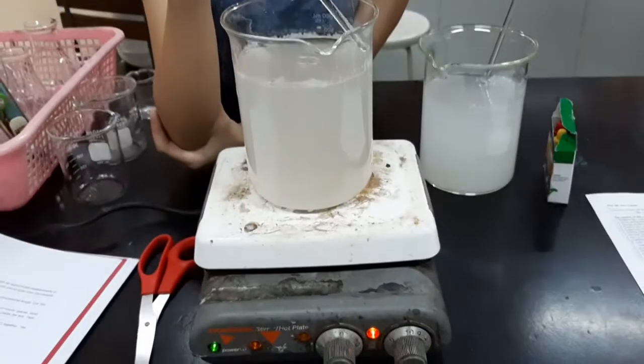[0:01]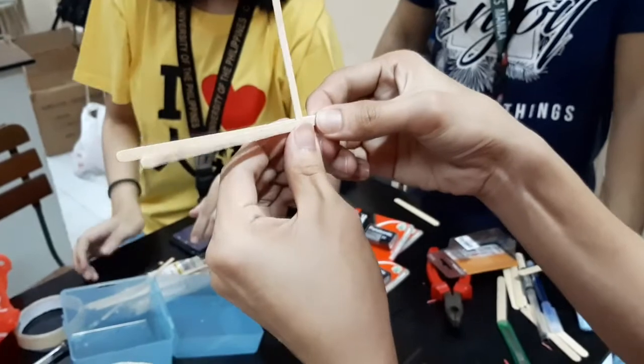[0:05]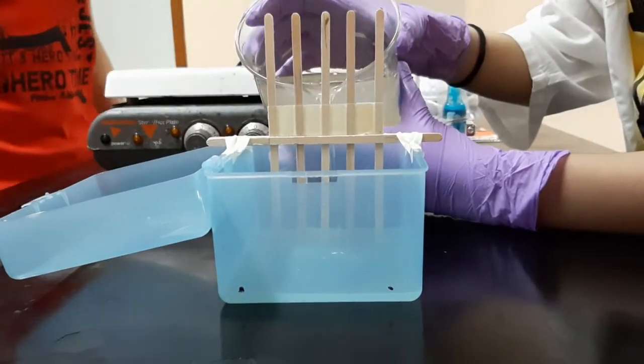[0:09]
Electrophoresis is a laboratory technique used to separate biological molecules based on their size and electrical charge. An electric current is used to move molecules to be separated through a gel.
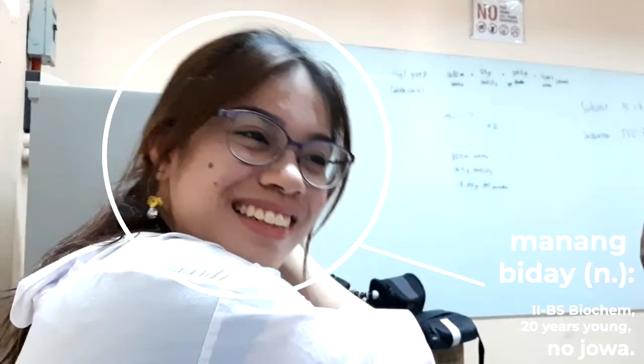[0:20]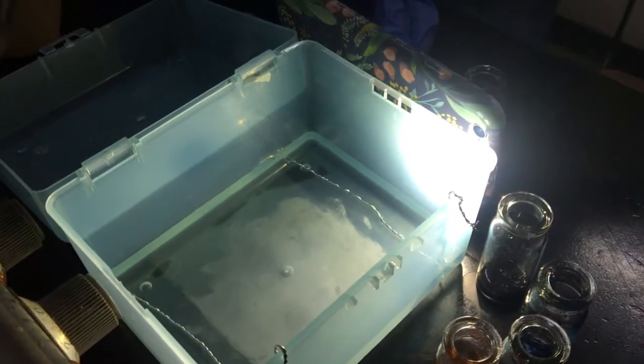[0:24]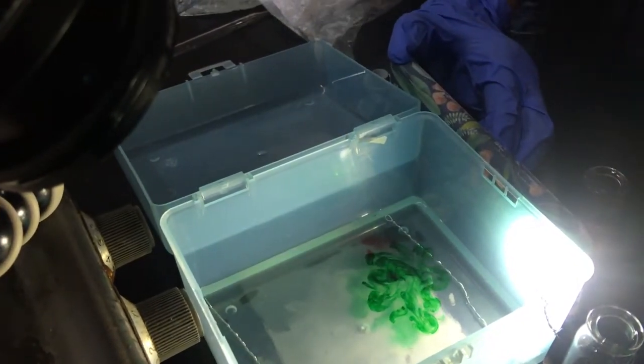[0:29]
Hi, I am Manang Biday, and in this video, let's take a step-by-step look at how to construct an electrophoretic setup using simple materials, and you shall be able to see how it separates samples, in this case, food coloring.
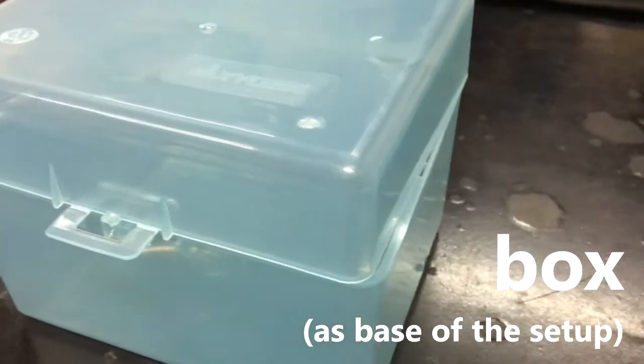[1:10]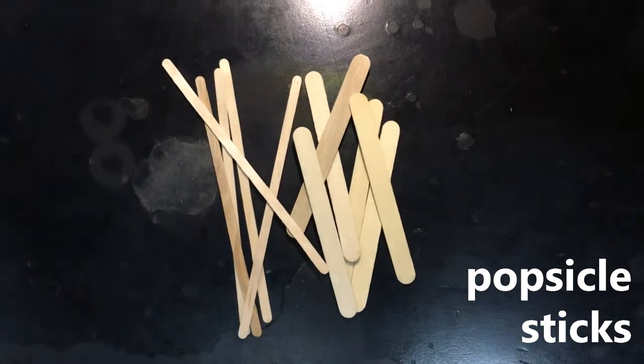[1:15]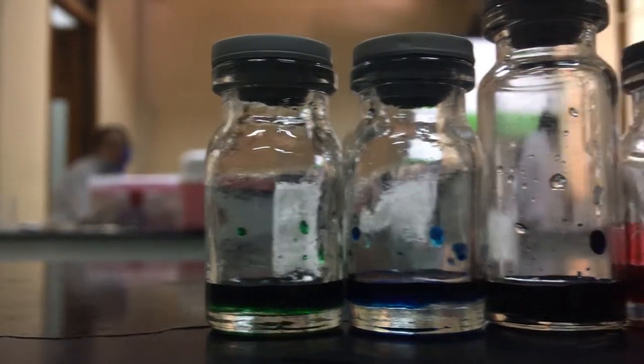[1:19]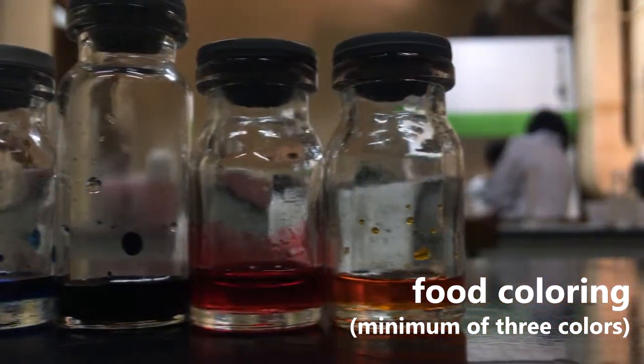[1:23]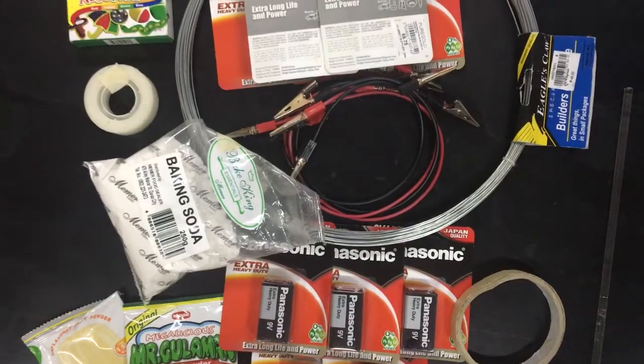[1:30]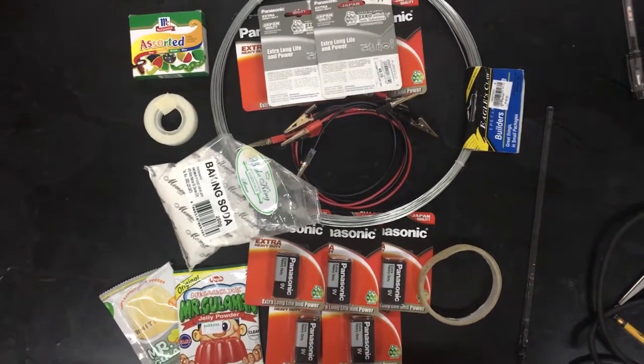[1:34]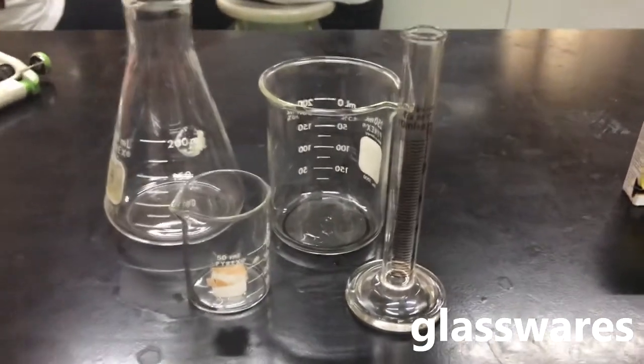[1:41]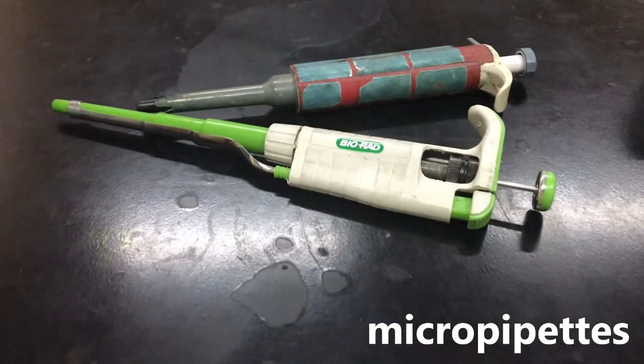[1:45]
First thing that we need to do is to assemble the materials needed for this experiment.
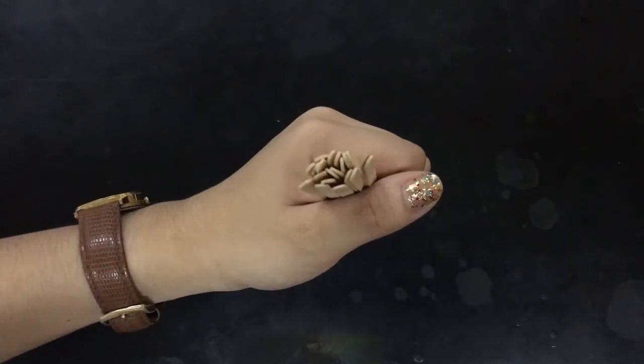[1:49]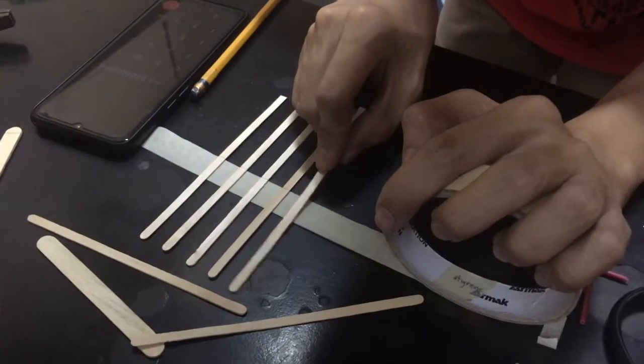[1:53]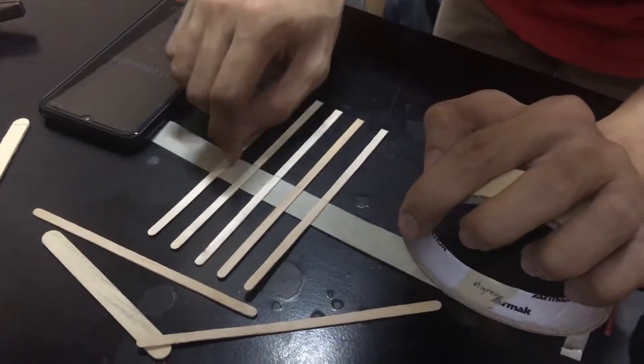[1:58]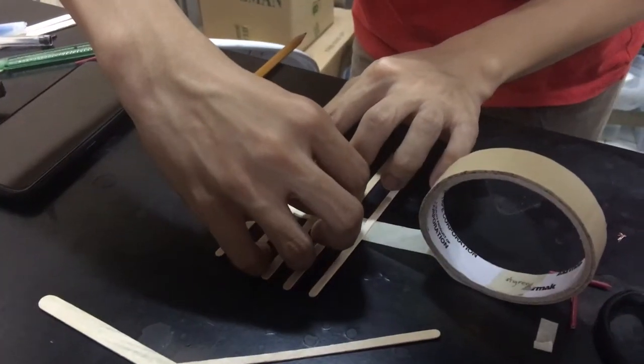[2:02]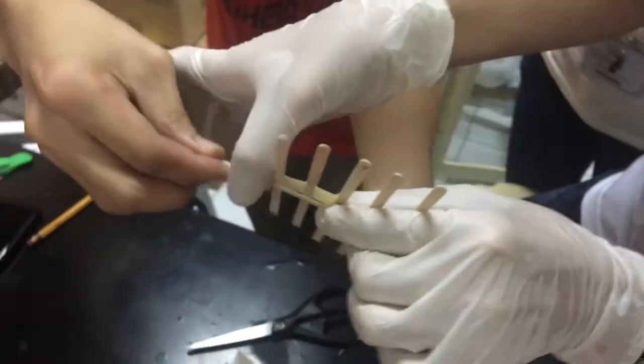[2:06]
First, we assemble a gel comb similar to this figure. The comb is made out of 5 coffee stirrers evenly spaced from each other, having the same height from the bottom of the box. They are then sandwiched in between 2 popsicle sticks. We tape them all together and the gel comb is formed.
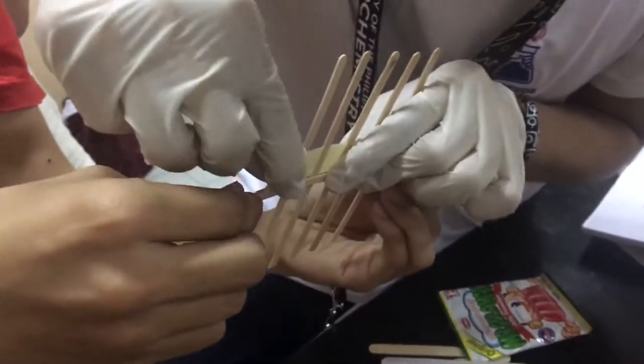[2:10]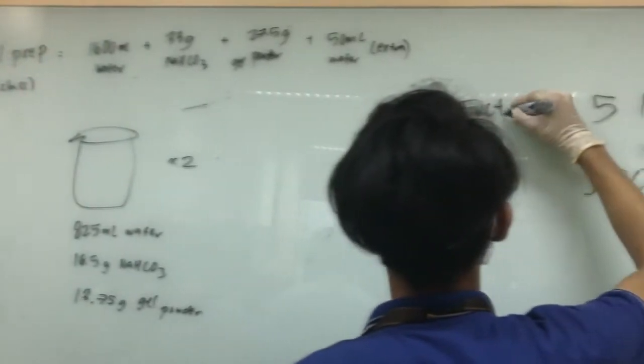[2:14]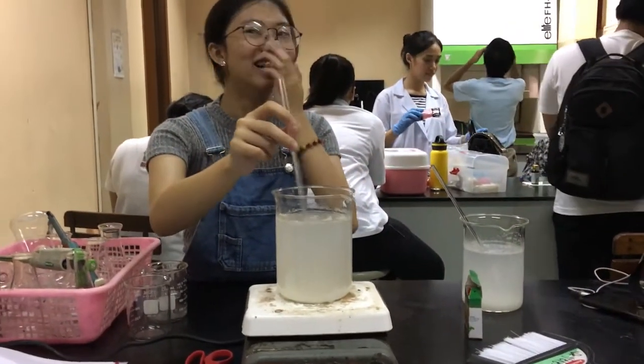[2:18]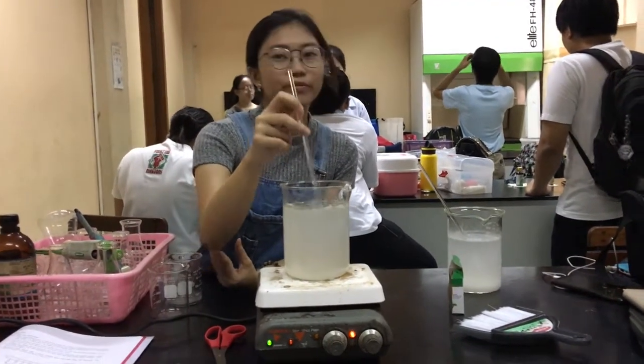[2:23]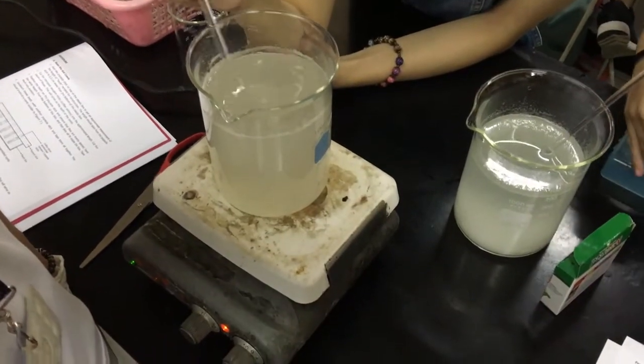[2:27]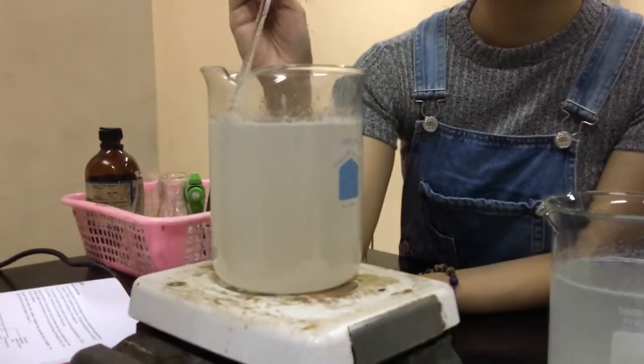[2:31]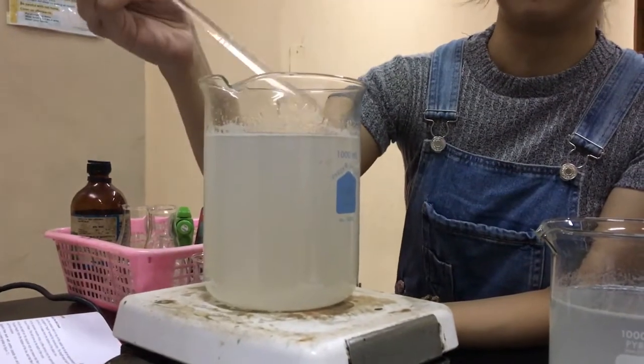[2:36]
Next, we prepare the gel. 50 ml of 1% weight per volume colorless gelatin is prepared in a buffer solution made of 250 ml 0.2% weight per volume of sodium bicarbonate in distilled water. The resulting solution shall be the gel solution. It is heated and stirred several times until the gelatin powder is completely dissolved. The final solution is translucent in color.
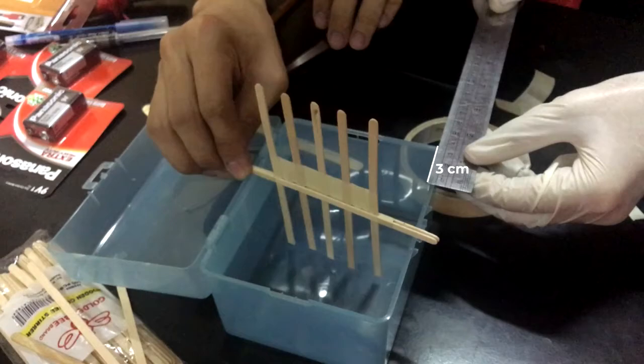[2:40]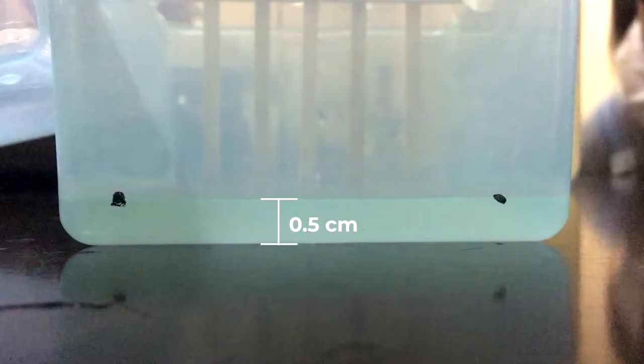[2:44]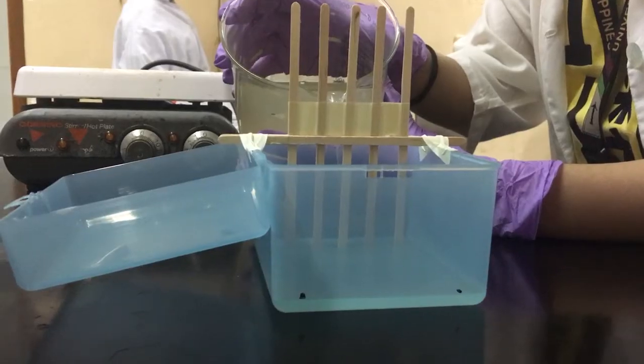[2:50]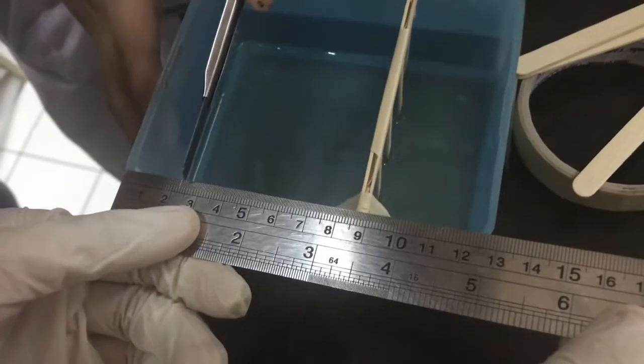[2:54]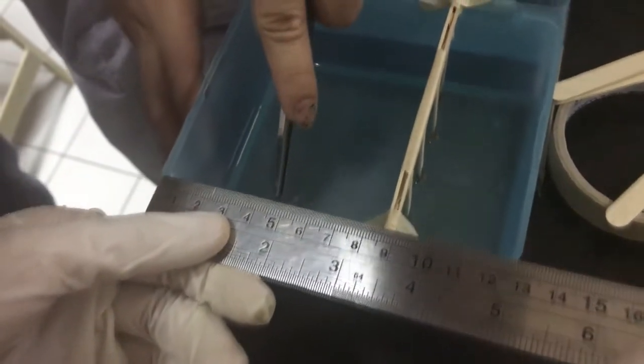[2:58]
The comb is now positioned 3 cm away from the wall of the plastic box. The gel solution is poured into the box until 0.5 cm of the teeth are submerged in it. The solution is then left to cool and solidify. After the gel solidifies, the comb is carefully removed, and the gel is cut 2.5 cm from top and bottom. The extra gel is discarded.
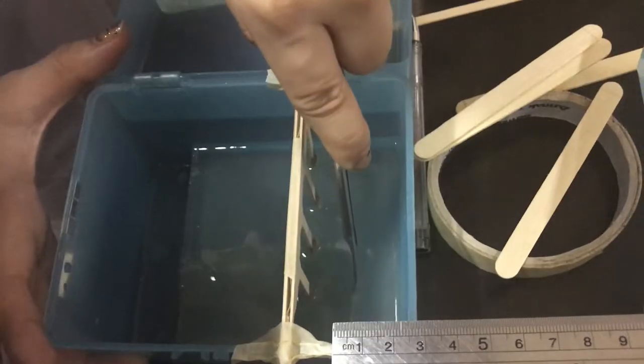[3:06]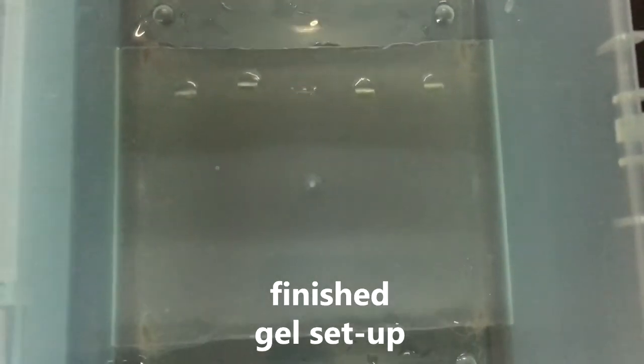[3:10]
Installing the electrodes is the tricky part. The wires are bent such that both fit inside the box and can be hooked at the sides.
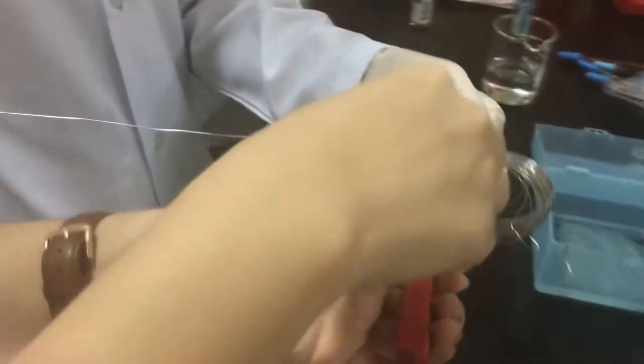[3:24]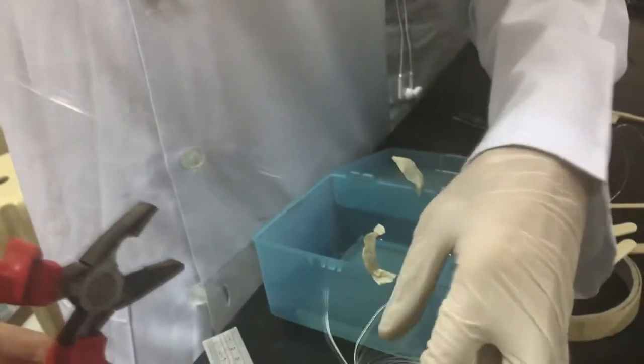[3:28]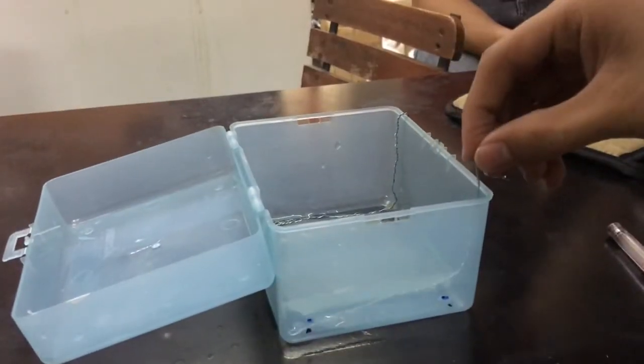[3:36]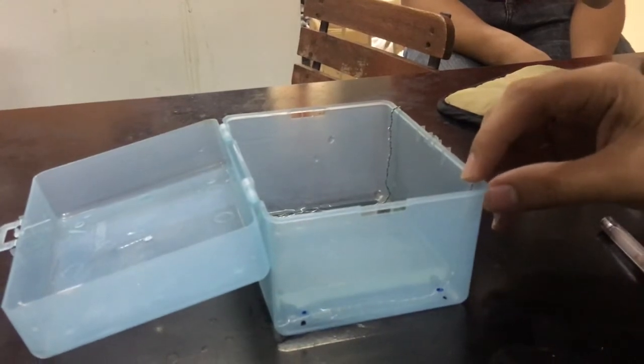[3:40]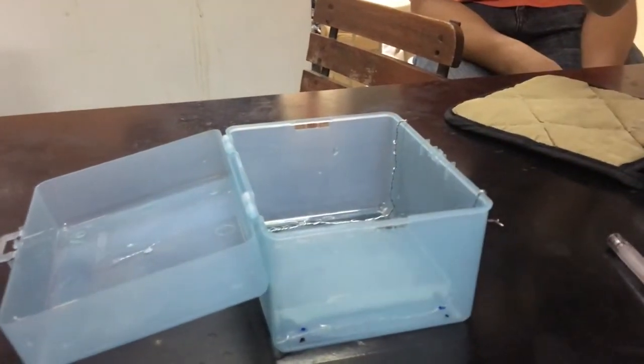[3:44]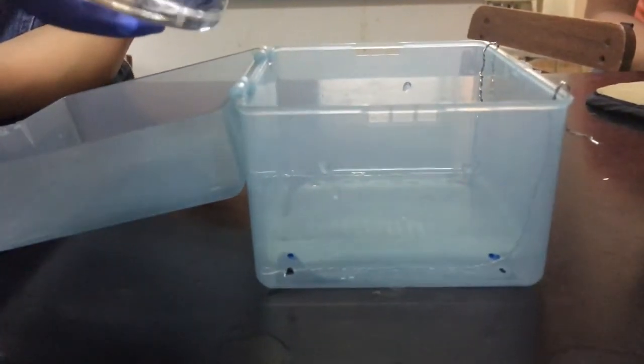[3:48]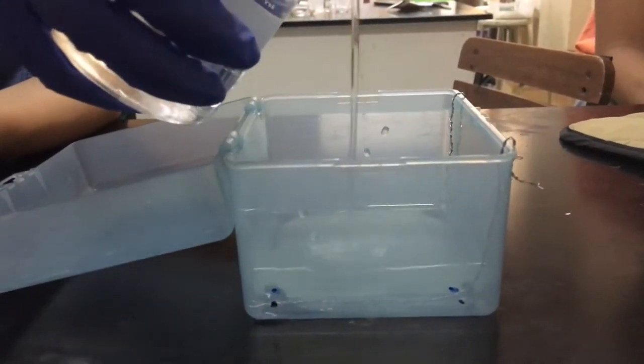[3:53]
After this, the buffer is added until the entire gel and its wells are submerged about 3 to 5 mm on top.
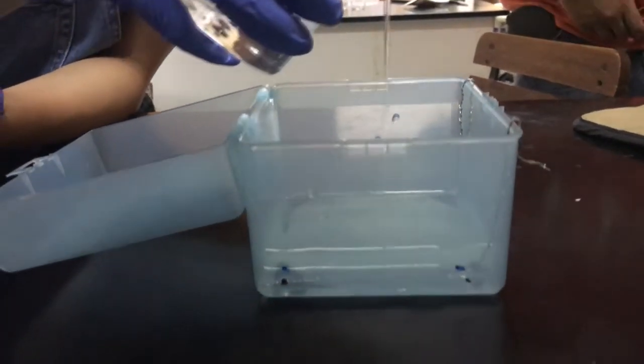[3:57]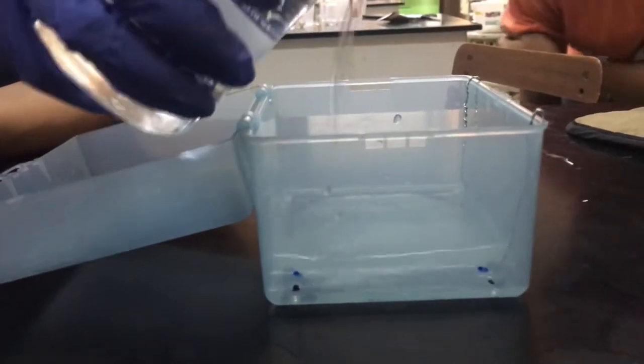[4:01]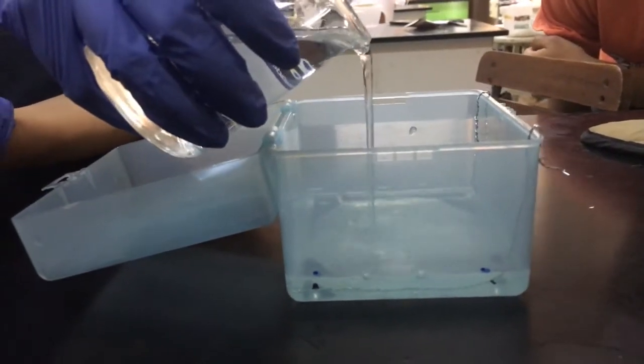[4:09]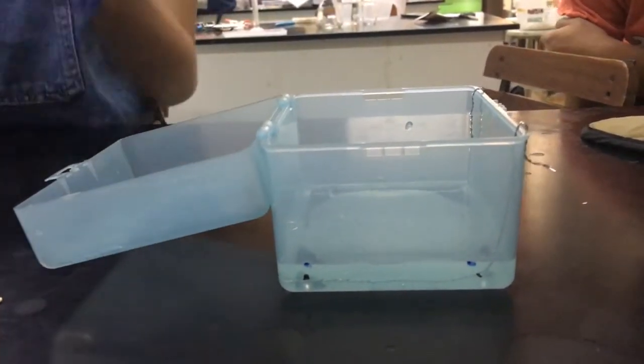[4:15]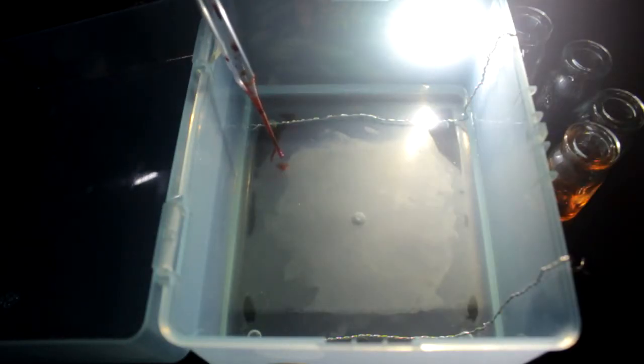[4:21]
The samples are then prepared by mixing 1 ml of glycerol with 2 drops of food coloring sample. Using the droppers, the samples are loaded into the wells.
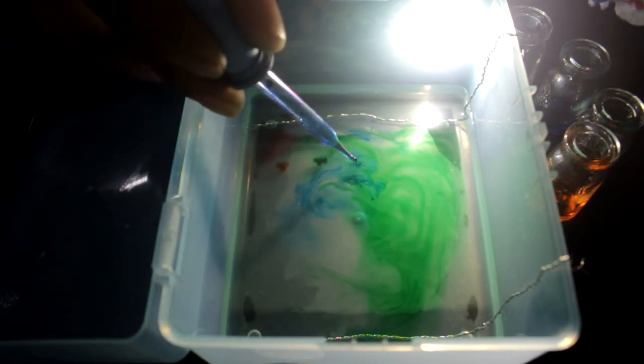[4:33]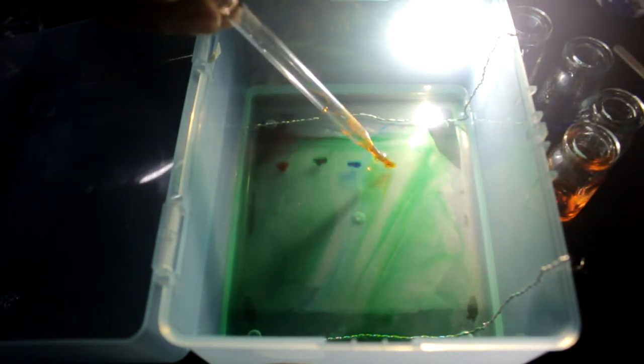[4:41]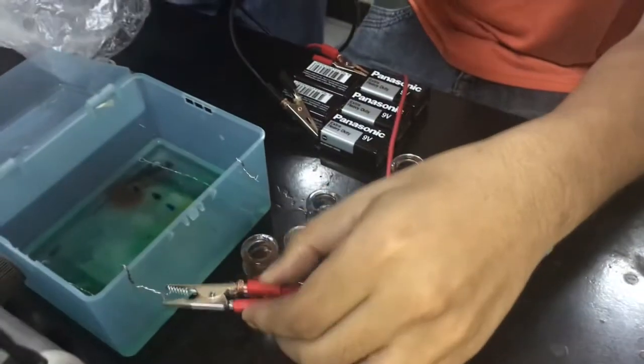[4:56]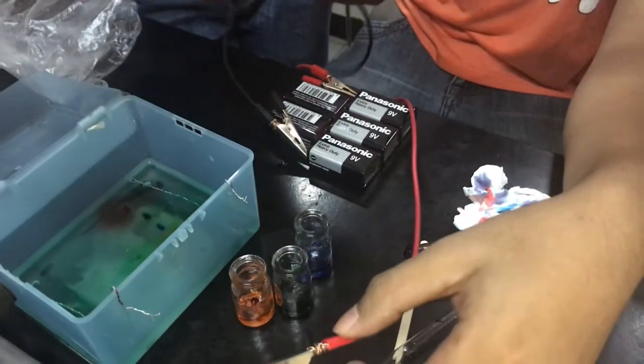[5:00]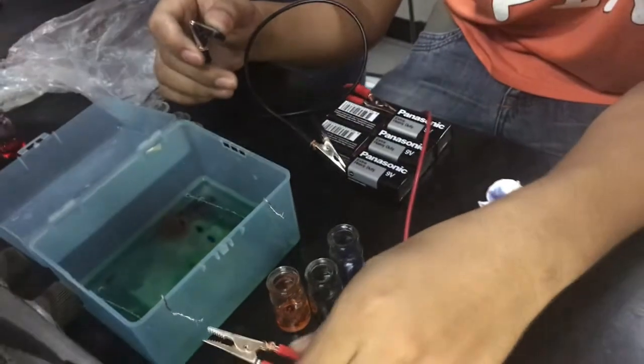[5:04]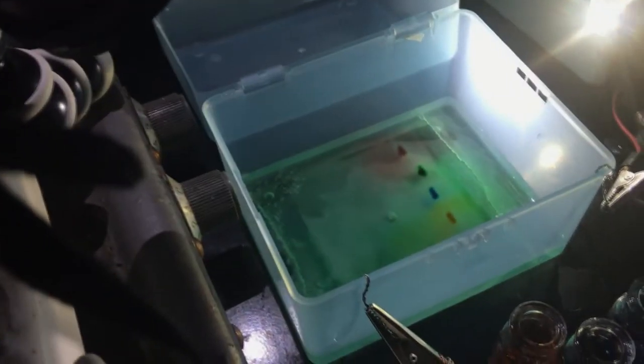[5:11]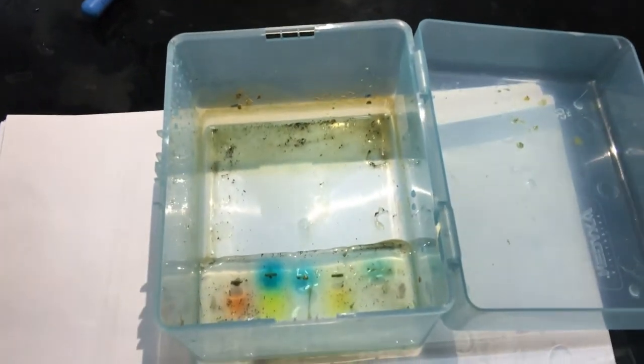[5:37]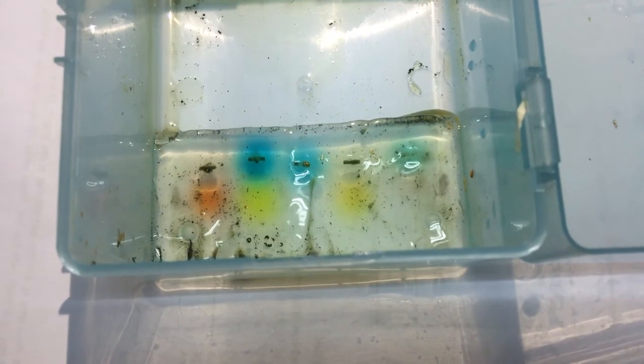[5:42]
Our setup took a little longer than expected, but it took us 2 to 3 hours to see visible results. As we can see, none of the samples moved towards the negatively charged electrode, which means that the dye molecules which were loaded into the gel were negatively charged at neutral pH. The yellow, red, and blue dyes migrated to the positive charge, with the yellow dye traveling the farthest. Moreover, the blue and yellow components from green were separated, as well as the blue and red from violet.
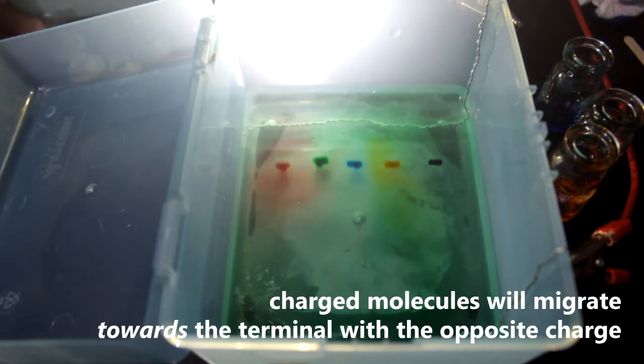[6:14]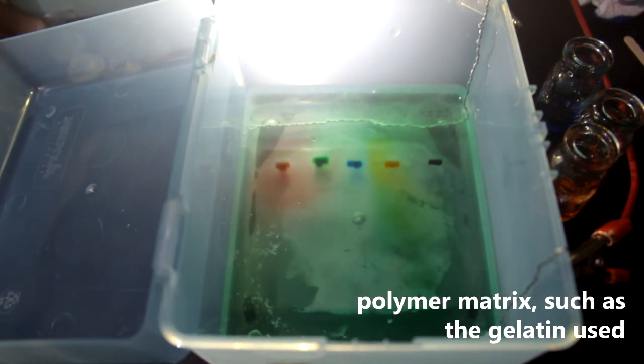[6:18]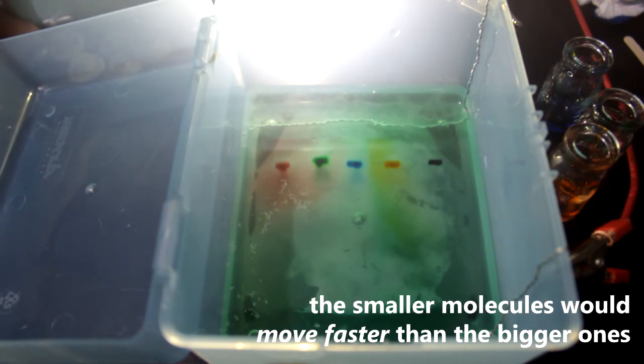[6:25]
By conducting an electric current through an electrolyte buffer, like the sodium bicarbonate buffer that we used, charged molecules will migrate towards a terminal with the opposite charge. Once suspended within the polymer matrix, such as the gel, the molecules will move at different rates based on their size. The smaller molecules move faster than the larger ones since they are able to pass through the pores of the gel easier than the larger molecules.
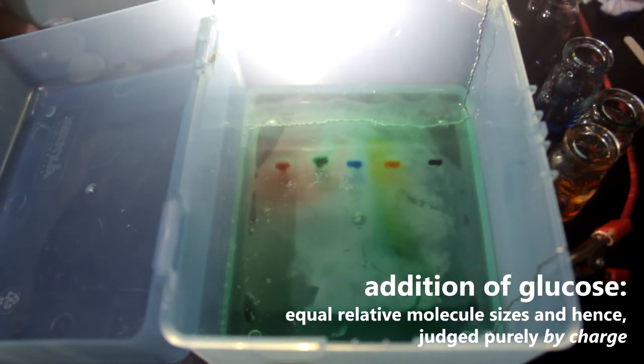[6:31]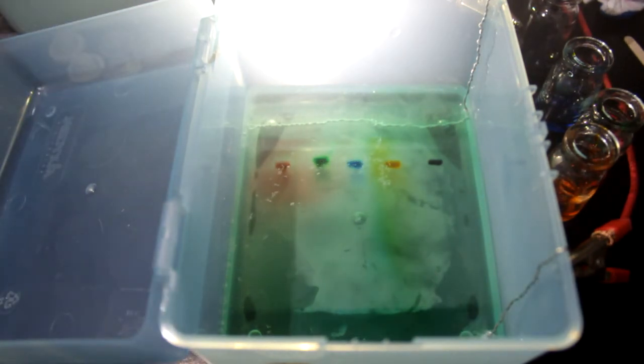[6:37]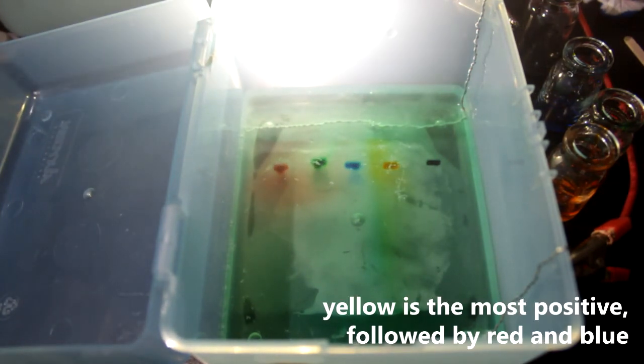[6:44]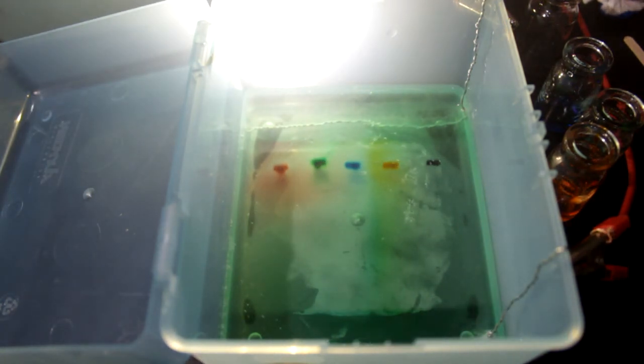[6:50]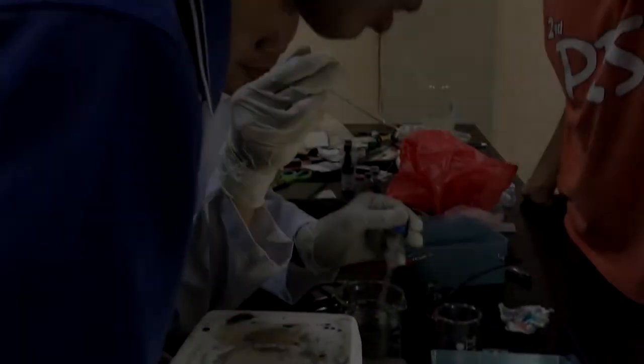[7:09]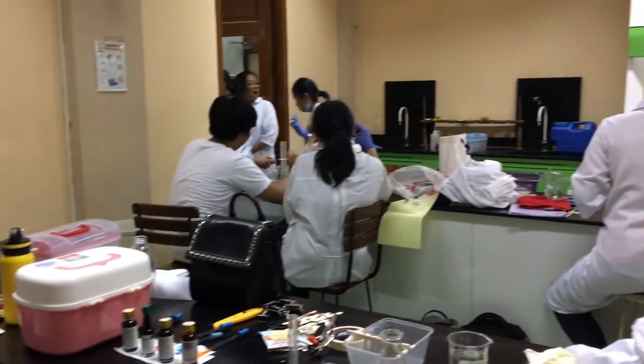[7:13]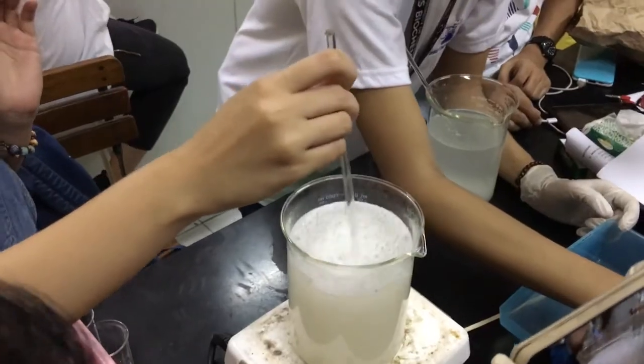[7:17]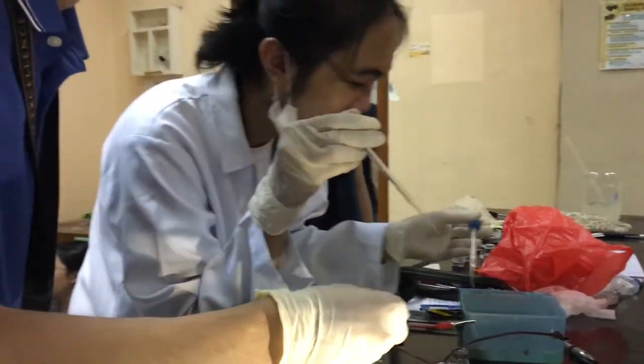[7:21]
Gel electrophoresis is a very essential tool used in molecular biology and genetic engineering. This experiment demonstrated the ability of gel electrophoresis to separate the mixture of dyes into their individual components by the application of a combination of dyes to the same sample well.